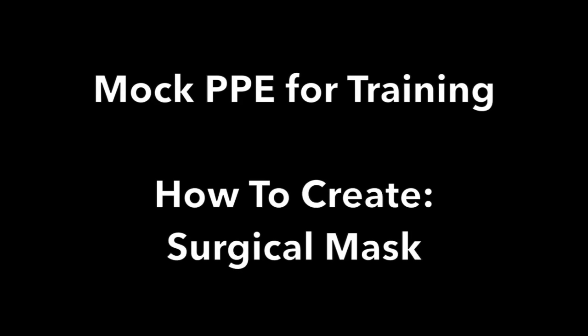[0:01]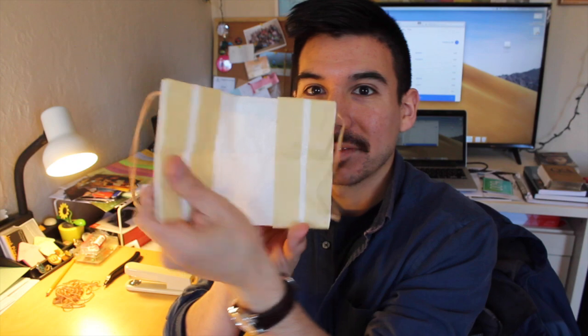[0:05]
How to create a mock surgical mask for PPE training. Hello! This is what the mask looks like completed. You can loop it over the ears. You can adhere it across the nose and the face for a good fit. It is also single use, so you can toss it out when the learner is done.
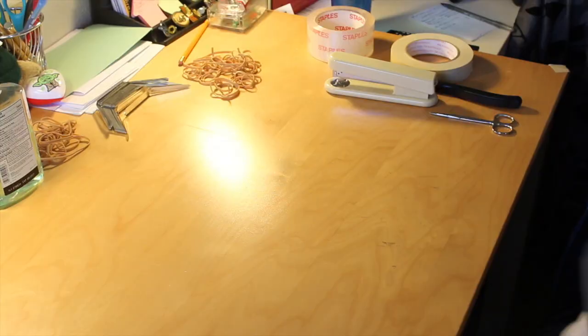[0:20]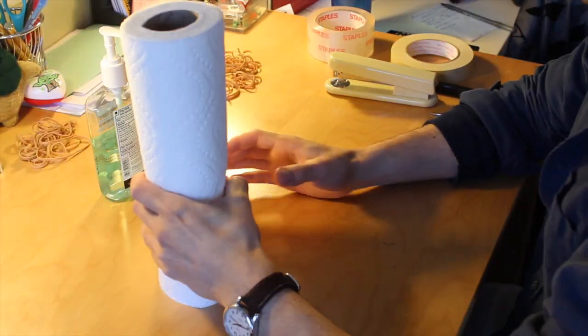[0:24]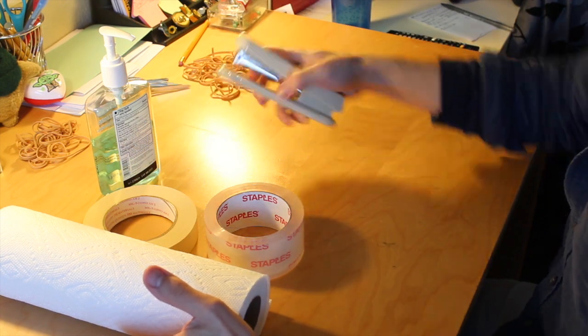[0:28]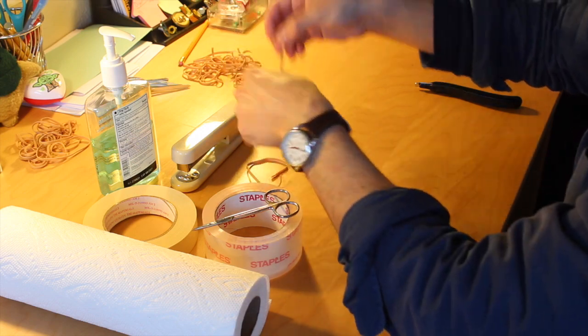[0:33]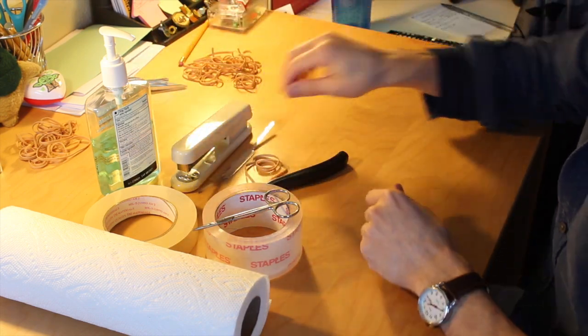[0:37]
Pretty good. Things you're going to need to make this mask: some hand sanitizer, paper towels, packing tape, masking tape, stapler, scissors of some sort, rubber bands cut in half, stapler remover, and I'm using a long strip of malleable thin metal to adhere to the nose.
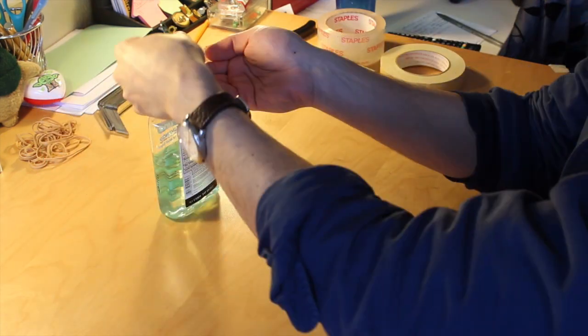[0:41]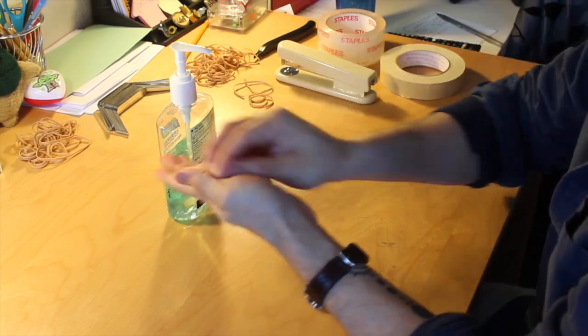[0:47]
First step is to perform hand hygiene. You want to make sure that your hands are nice and clean as you start working with this item, which is going to come into close contact with the learner.
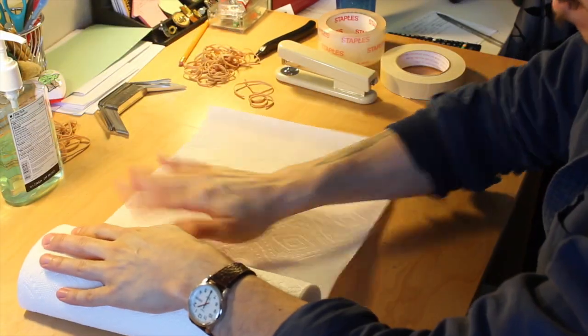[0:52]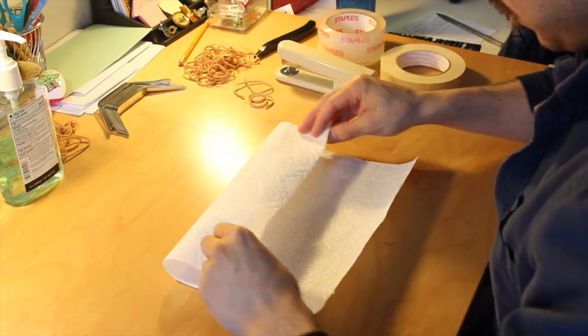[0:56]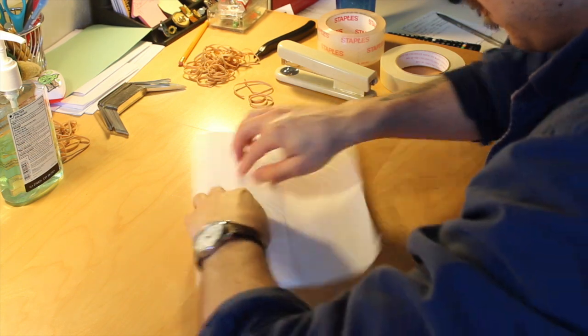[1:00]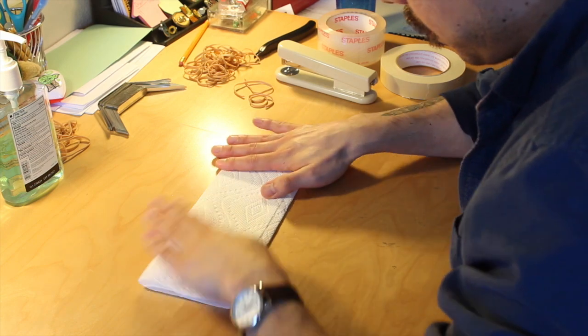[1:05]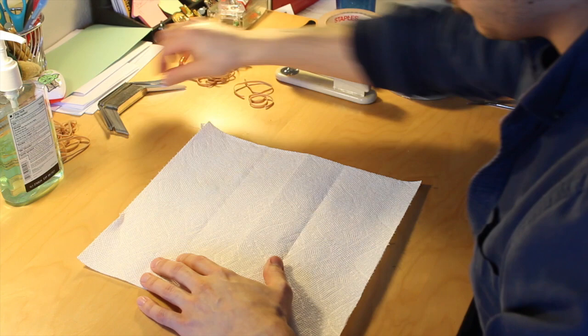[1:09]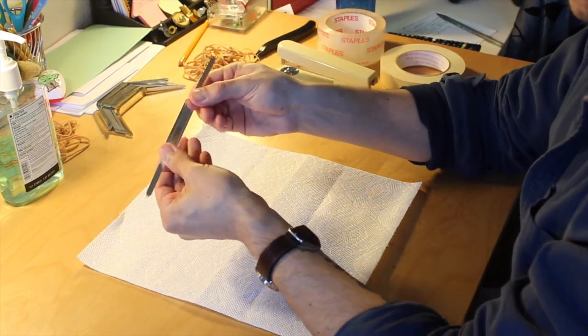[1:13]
Then you want to get paper towels. You want 2 segments of connected paper towels. Fold down the top edge past the middle crease to about 1/3 of a way through the second segment of paper. Rotate it around, bring the other edge down, folding it like an envelope. Open up that envelope. Then you're going to take your long, thin piece of malleable metal and put it at the topmost crease that you have now.
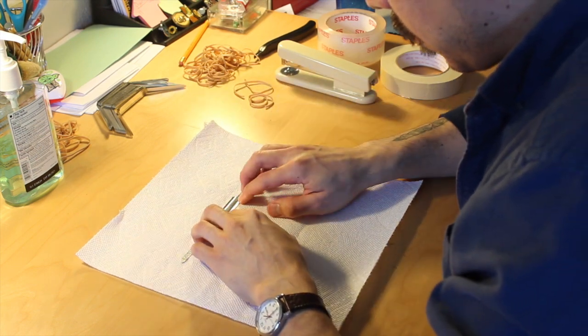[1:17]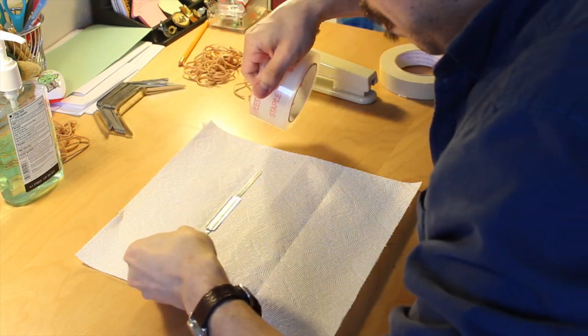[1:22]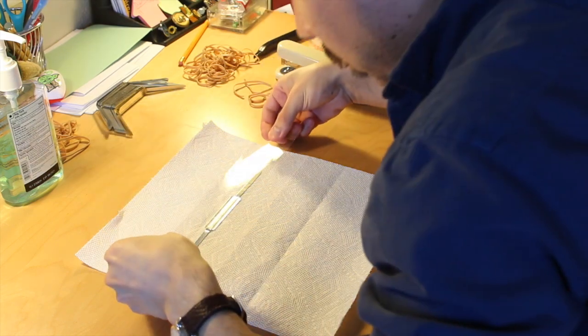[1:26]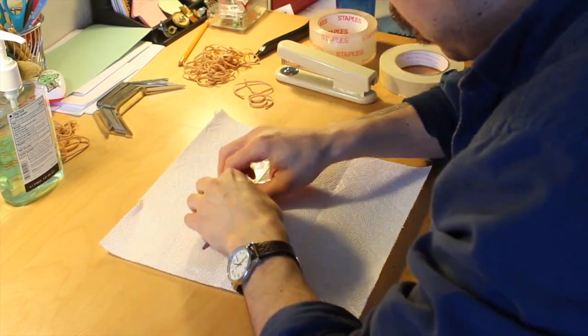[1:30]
You're going to get your packing tape. You're going to cut a segment that would cover the whole piece of metal. Secure it down nice and snug. And then you're going to fold that envelope shape back up.
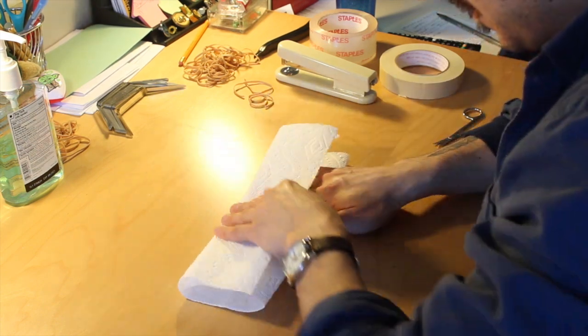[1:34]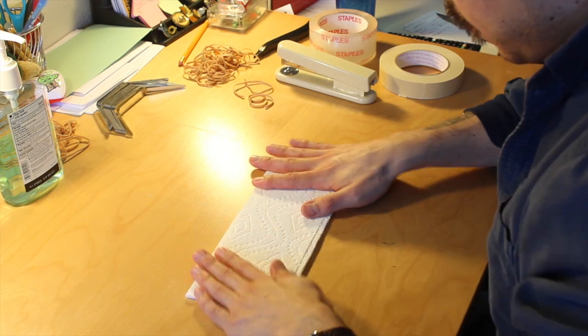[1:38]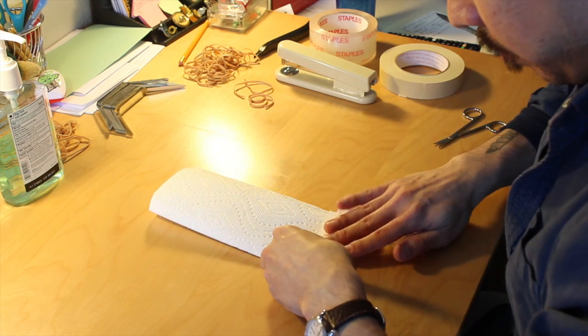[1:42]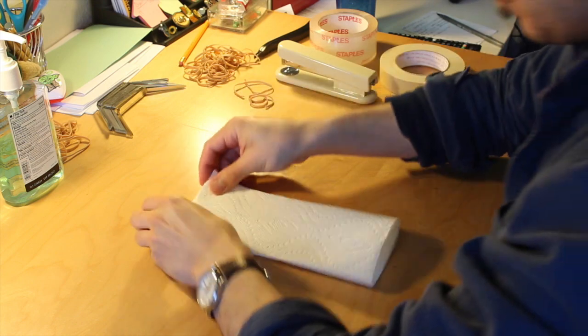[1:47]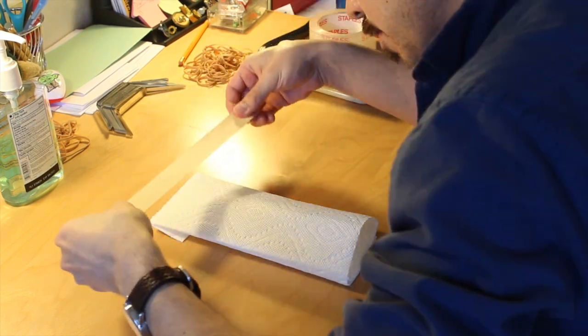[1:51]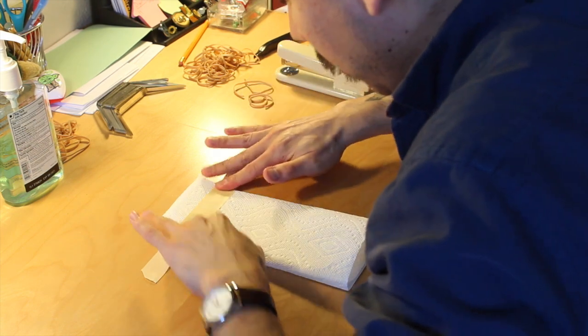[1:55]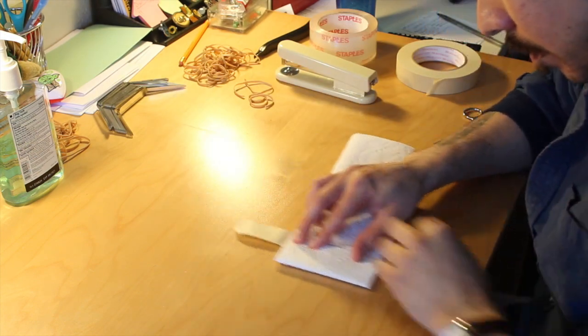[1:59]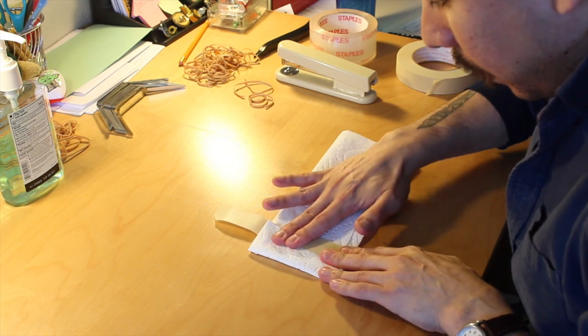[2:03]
Then you're going to bring in the edges until it meets the end of that metal piece and fold it very gently so that that metal piece doesn't poke through the ends. You're going to take a long piece of masking tape and secure down that folded edge. And so the masking tape should be long enough so that it meets itself on the other end, making one long secure strip for that edge.
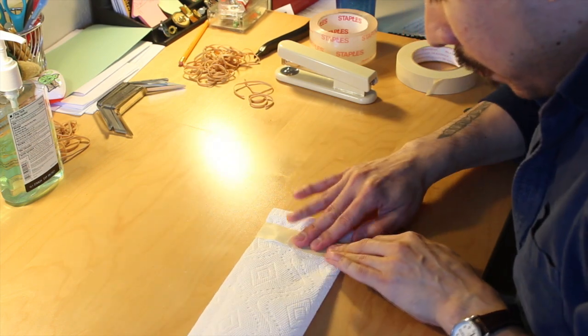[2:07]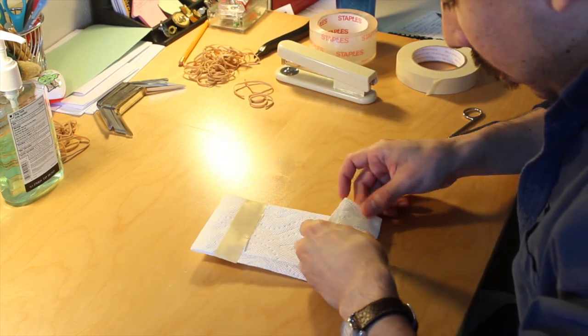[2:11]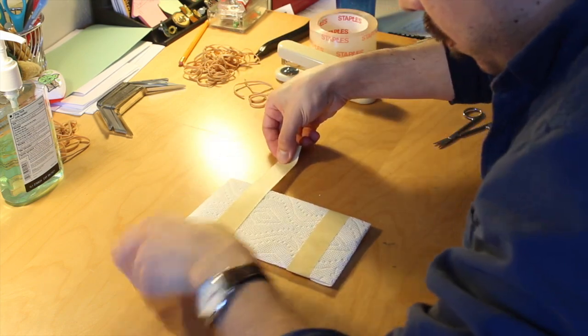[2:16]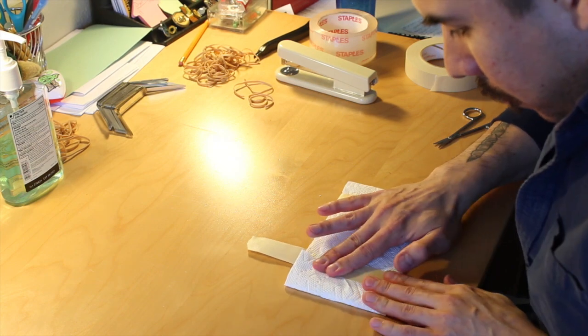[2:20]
And now you're just going to repeat on the other side. Gentle fold, flip it over. Nice long piece that meets itself on the other side for one long secure strip.
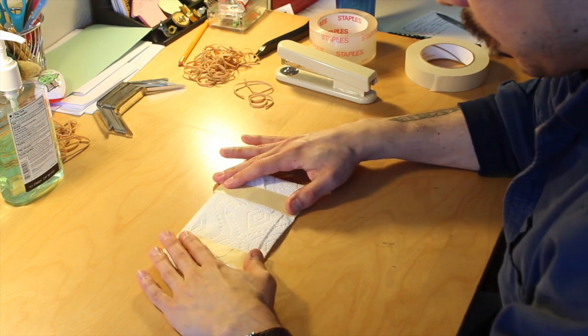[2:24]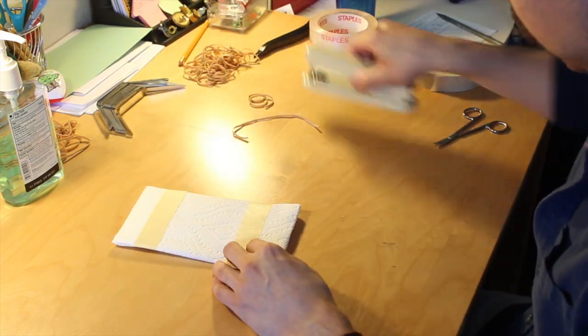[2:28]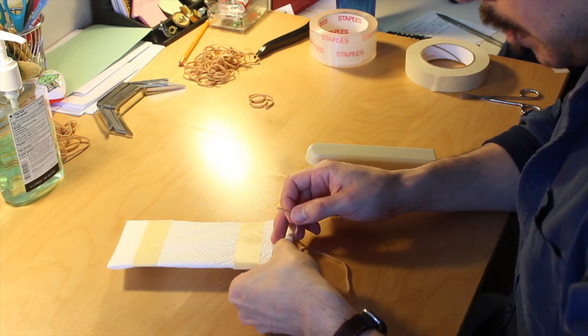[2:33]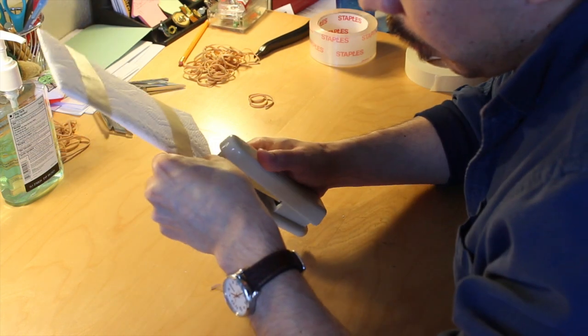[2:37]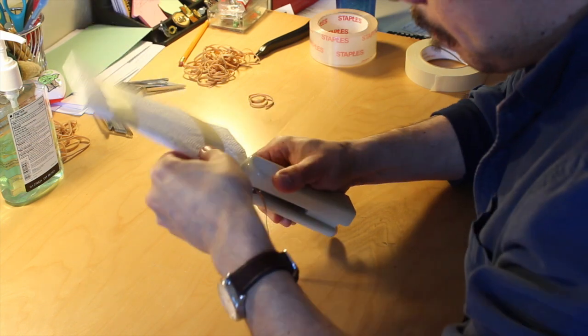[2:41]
And here's where your rubber bands cut in half are going to come into play. Take the side that is the patient-facing side, and that is where you're going to staple down the rubber bands. Now, I'm feeling out where the metal piece is, laying the rubber band right on top of it so that the staple staples around the metal piece.
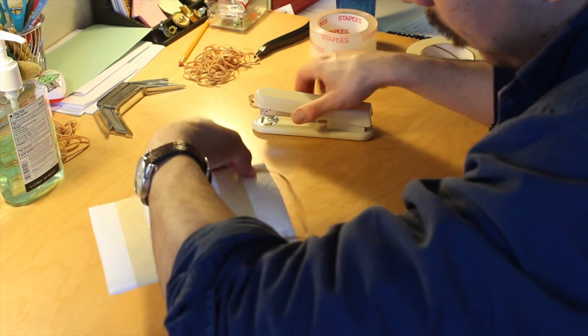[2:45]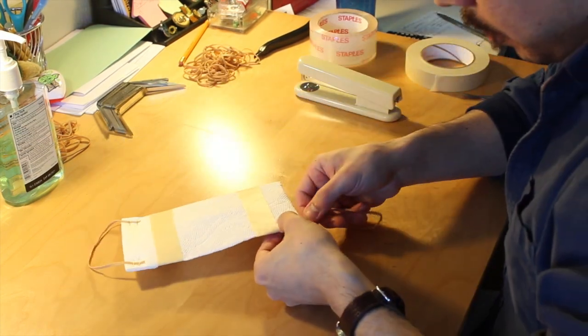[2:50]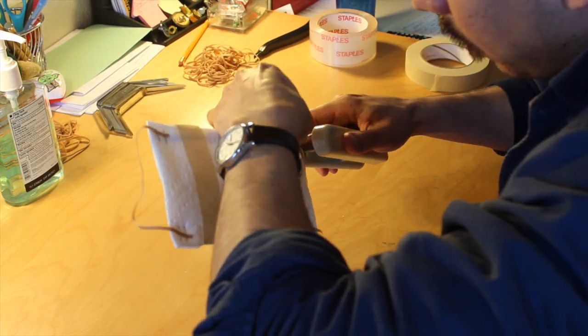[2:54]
This can be a little tricky, and this is where the stapler remover can come into play. Easier on the side that doesn't have the metal piece. So I'm stapling twice just to be extra secure with that rubber band.
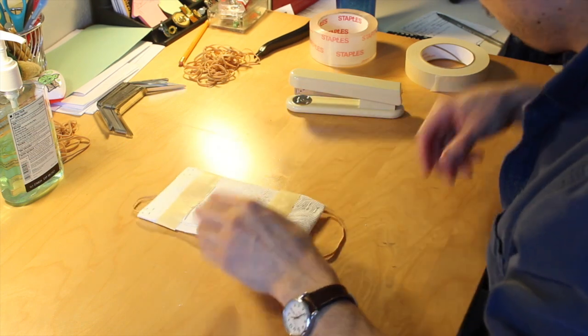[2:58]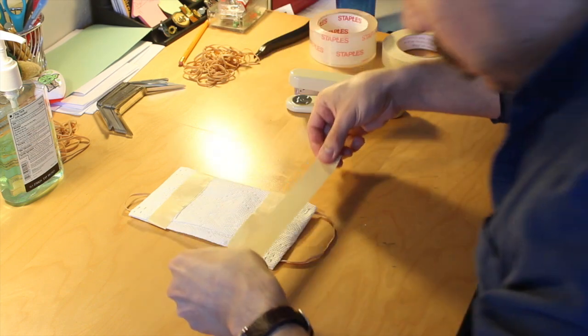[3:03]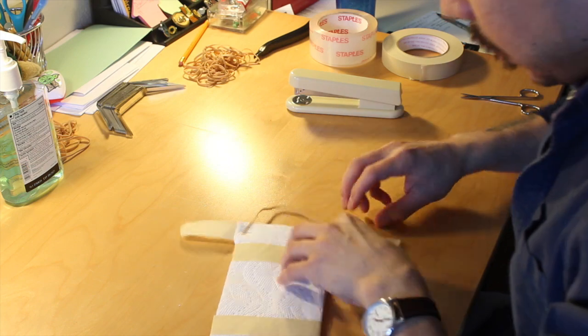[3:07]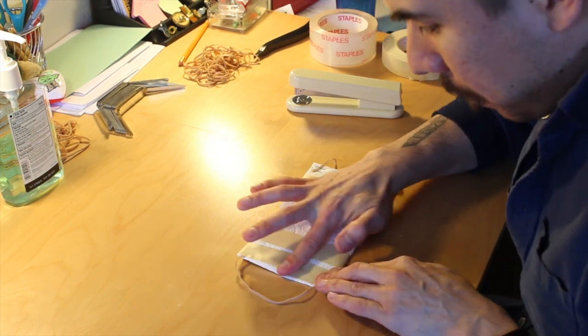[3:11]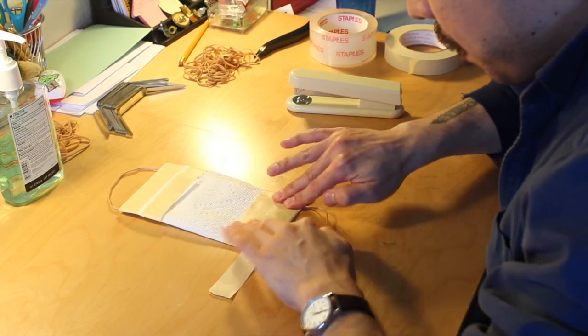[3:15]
They're both down. And then I'm going to take masking tape, like I did with the fold, nice long piece, and now I'm taping over those exposed staples so we make sure that we don't get any sort of cuts or scrapes or hair getting caught in the staples, just for extra safety and extra comfort for our learners.
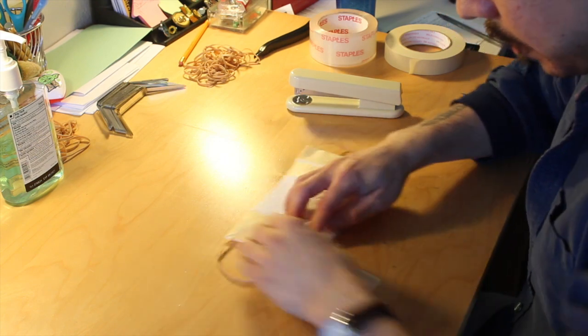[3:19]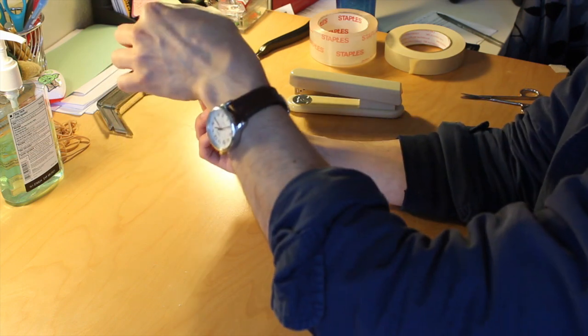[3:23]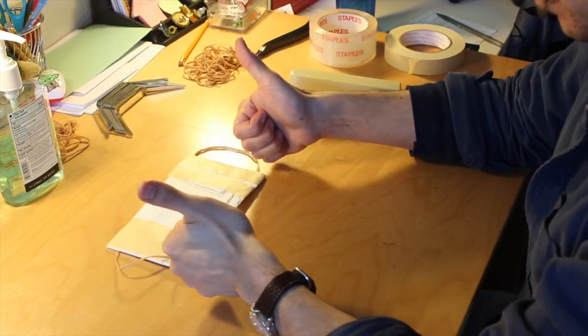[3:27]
And I like to warn people not to tug too hard on those rubber bands because they can pull loose, but just for a single-use training it should work just fine, and that is the mask.
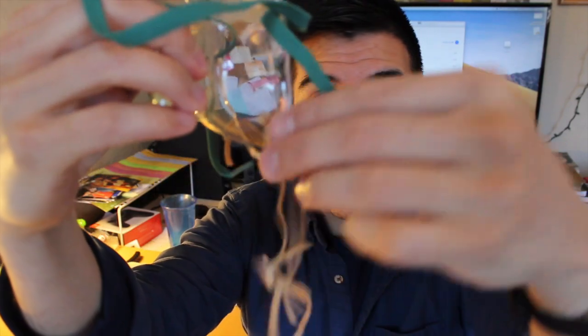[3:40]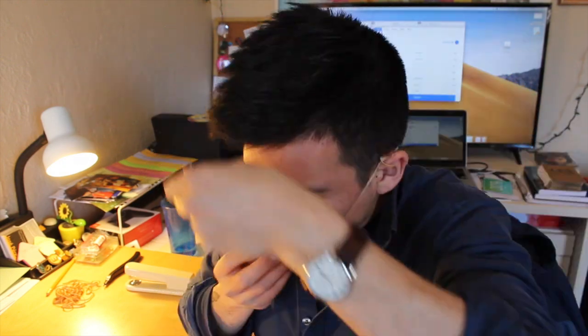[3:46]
I quickly wanted to show you the mock N95 respirator mask that Dr. Linda Kors at McMaster University came up with. Take a patient oxygen mask and you just add a long piece of rubber band connected at the bottom of the mask, so that you can get that double strap feel, and the mask still fits around the nose and the chin, just like the respirator. Also, you can clean it down, use it again for other learners. I think it's a great design.